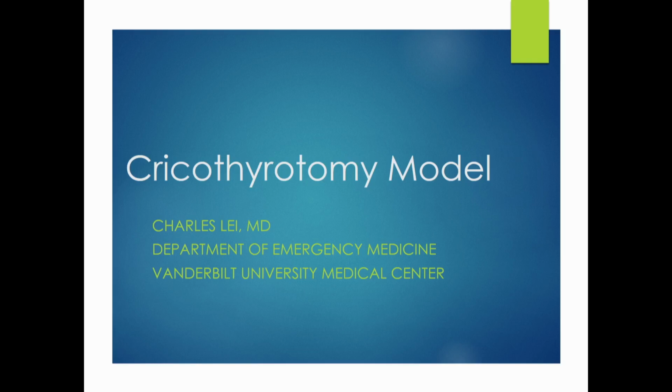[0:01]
I'm going to talk about the cric model, and we've built several other models, but I really like this one because I think you can talk about simming it up versus keeping it as bare bones as possible, and we can talk about that in small groups.
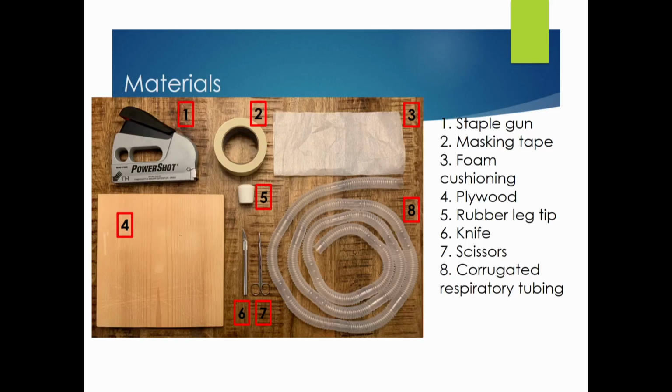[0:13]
You need a few supplies, and really most of this is optional. What you really need is some tubing, the respiratory tubing that you get from the emergency department. And again, this is not going to expire, so you just have to be friends with your supply center person and grab it. Each one of these will give you about 35 models, and you really don't need 35 models because each model that you build is good for hundreds of uses. So you really just need one of these.
A pair of scissors, an 11 blade just to do the cutting. This is foam cushioning, and you can get it at Amazon. It comes in a gigantic roll like this big. I can't remember how much it is, but it's really cheap, and that's hundreds of pieces, and each one gives you like 50 uses. And then some masking tape, and then the staple gun and the board are optional. We'll talk about that in just a second.
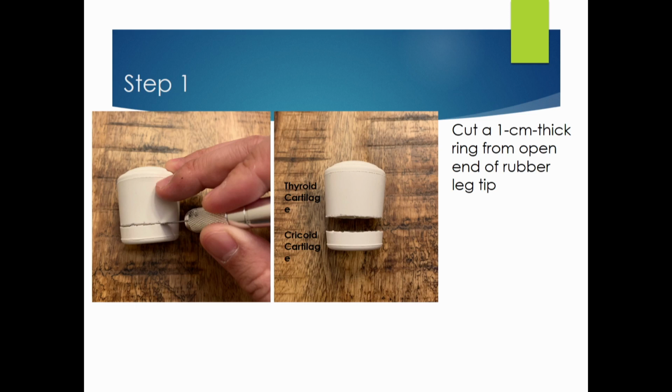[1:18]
The last thing you need, most importantly, is a rubber leg tip. You can get that at Amazon. It comes in packets of like 30 or so for like $10. The first thing is you want to cut a 1 centimeter thick ring from the open end of the rubber leg tip. This gives you the thyroid cartilage and the cricoid cartilage. It's not going to have that really nice Adam's apple, but it actually makes it a more difficult procedure, which we find really nice.
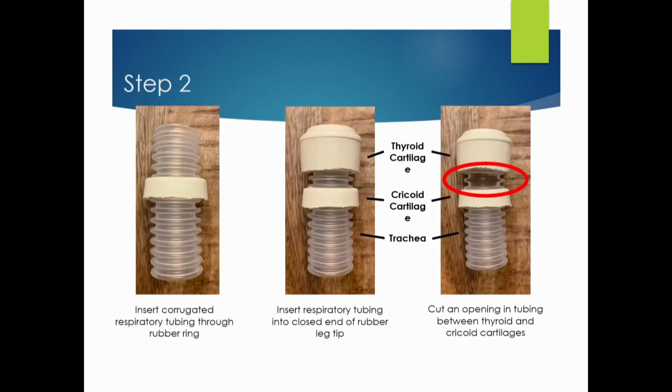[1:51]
Take a small piece of that respiratory tubing, and shove that open ring through, and then put the thyroid cartilage up on the tip. You want to leave a little space in between, and then take your 11 blade and cut a little opening there. And so this is basically your model right there.
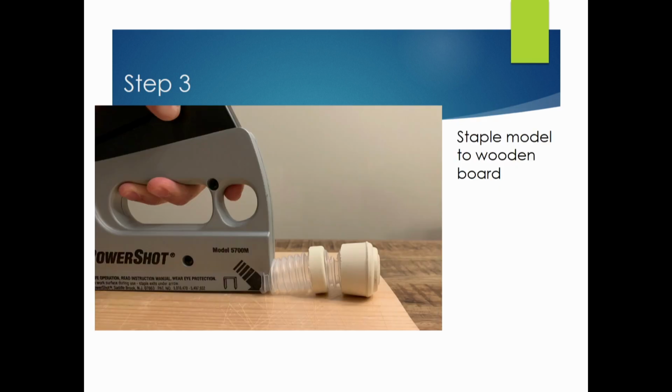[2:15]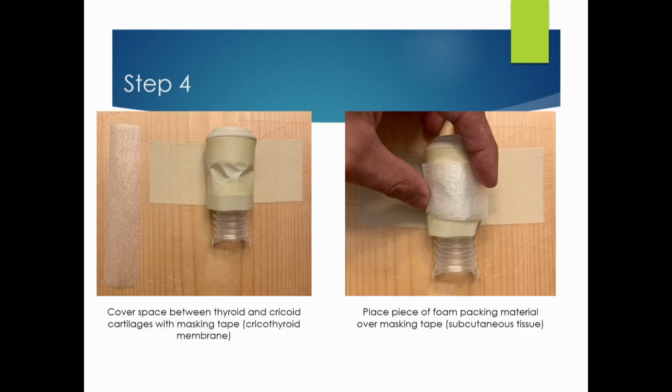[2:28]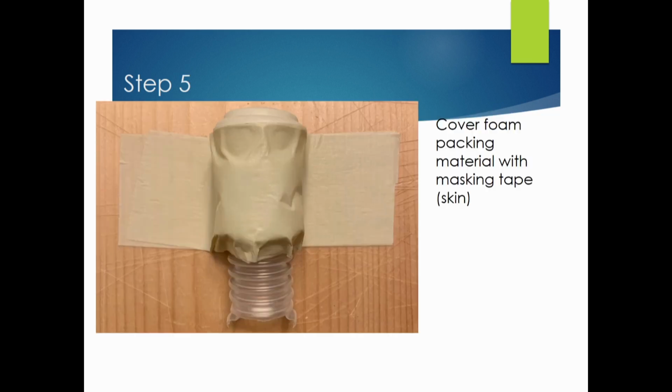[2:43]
Optionally, if you want to stabilize it, you can take a board and staple it onto the board. But I find that you can just tape it to a table, tape it to a wall, tape it to whatever, and it allows for a very mobile procedure. Wherever you tape it, put a piece of tape down, add a little bit of that foam cushioning to provide some of that subcutaneous tissue. You can add more or less depending on how difficult you want the procedure to be, and then put another piece of tape on top. And so this is the finished model.
It's really easy to build. We'll do it at the table over there. It takes about 5 minutes to build. Again, you can use this hundreds of times before it really falls apart, and it's very mobile. And the nice thing about this model is that you can just use it as is, or you can put it onto a mannequin. If you have an airway model, you can just apply it to the neck area.
What we've done is we've bought those styrofoam heads at department stores, and then cut a little hole in the neck area and put it in there, and that adds a little bit to the fidelity. When you actually do the procedure, what's nice about this model is when you put your bougie down, you can actually feel those rings, which is really cool. On the bottom end, as the instructor, you can see they've made it through. You can see the bougie go through, and again, this is really nice for lots of repetitions.
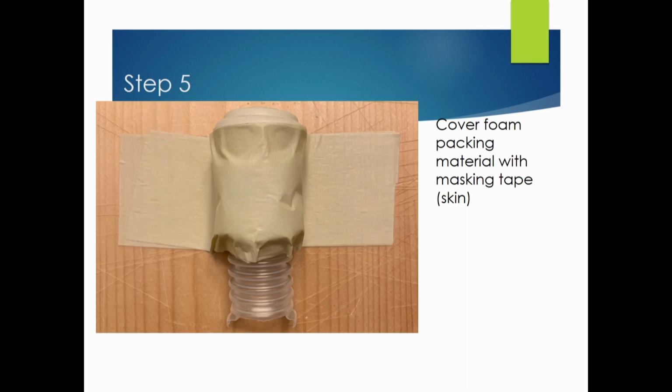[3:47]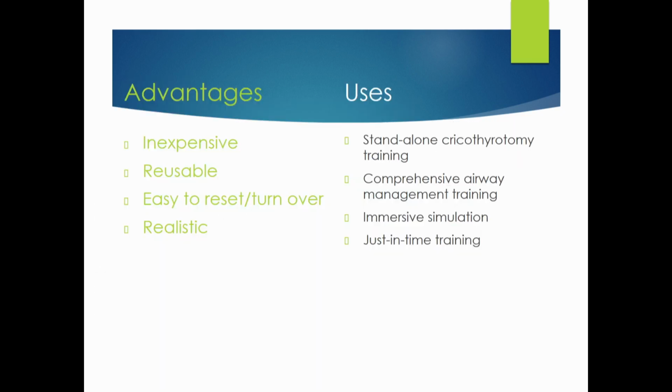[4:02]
I think this is really nice for those of us who might still be using pig tracheas for crikes, or cadavers where you really just get one cric out of the cadaver. You can do this hundreds of times. So really nice, it's inexpensive, it's reusable, it's easy to turn over, and it's fairly realistic. Again, you can sim it up or sim it down.
Is it important for you for the model to bleed? If so, we can talk about how we can do that, and add something small to it to make it bleed. There are several ways to do that.
You can use that as a standalone cric trainer, or use it as part of your airway training. And we've actually brought this to the ED, and done some just-in-time training. I mean, we don't do a lot of crics, right? But let's say you're working a shift and it's slow, and you want your residents to go through 10 crics right there in front of you. You can just do this with very little equipment.